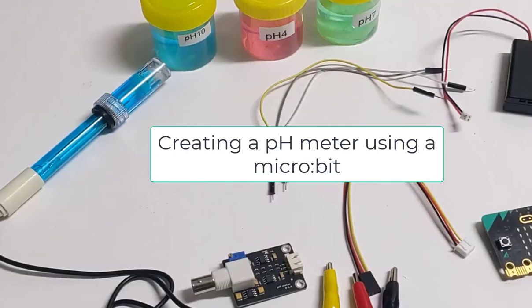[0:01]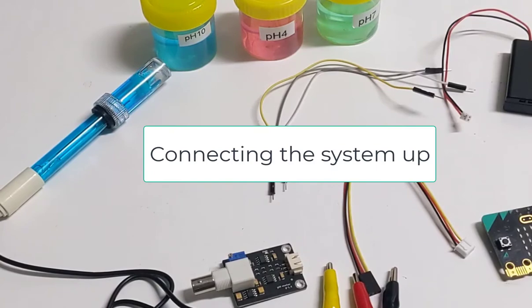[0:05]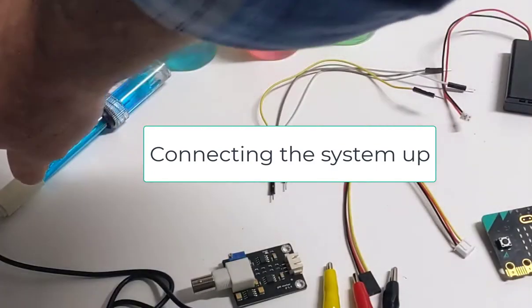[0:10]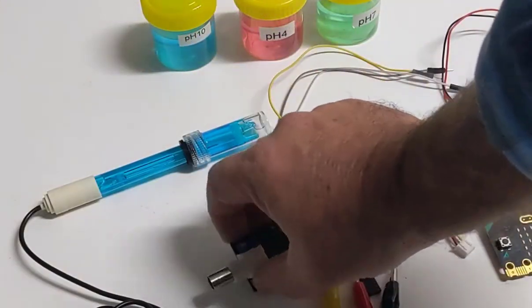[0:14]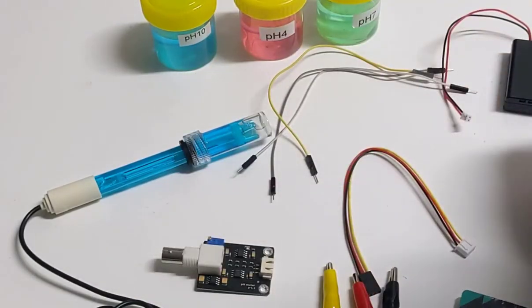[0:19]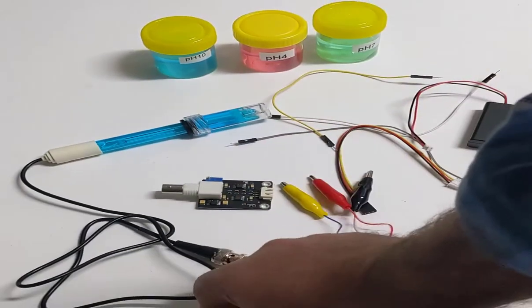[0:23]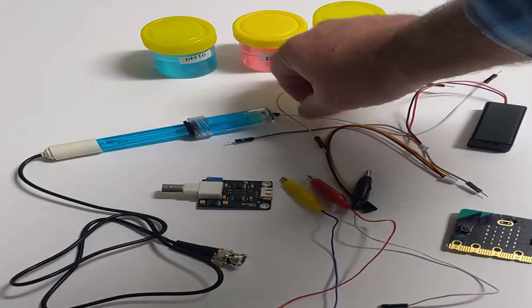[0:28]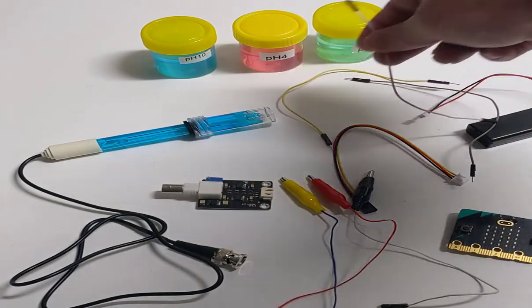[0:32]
In order to create my pH measuring system, there are a few things that I need, including a pH electrode probe, which is this, the sensor signal converter, which is this, my Microbit, a battery pack, some alligator clips, which on the other end of them have female DuPont connectors, and some, or three, male-to-male DuPont connectors.
To set it all up, first thing I'm going to do is connect up my Microbit to the alligator clips. So black can be ground, red can be the 3 volts supplying the power, and yellow can go to zero, which is going to supply the signal.
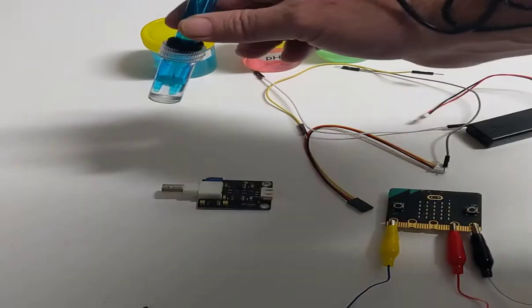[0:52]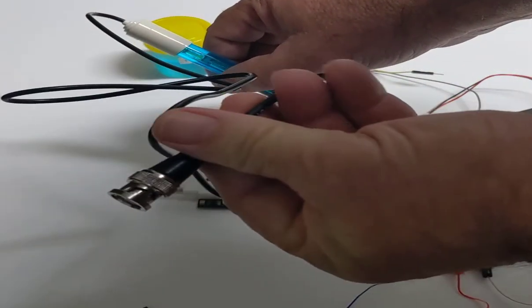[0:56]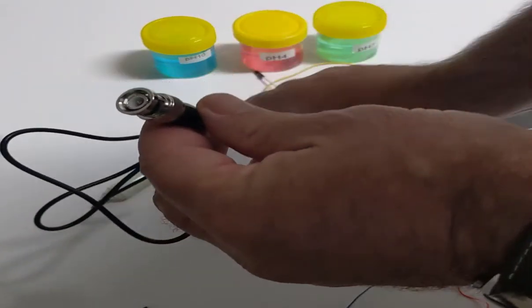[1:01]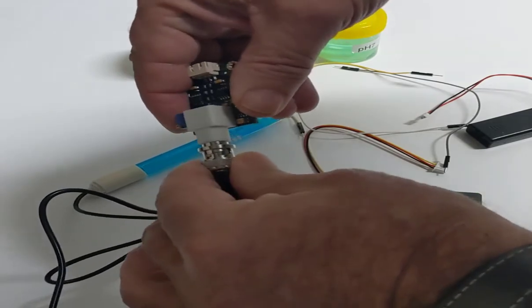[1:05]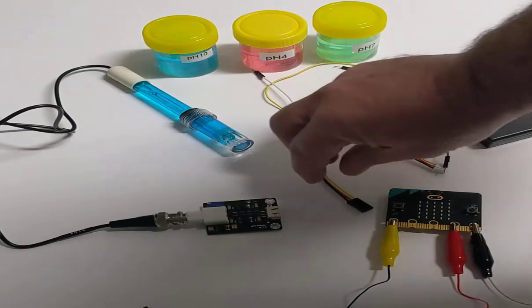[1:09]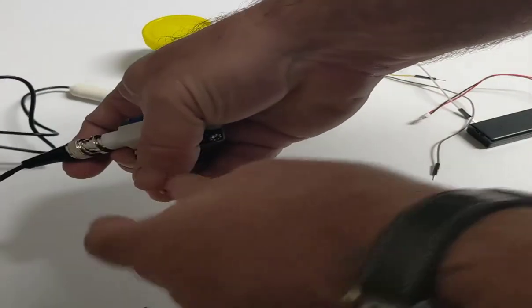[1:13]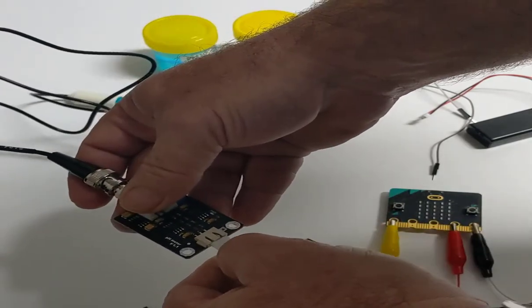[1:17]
Now, the pH electrode probe, notice the other end of it is one of these connectors. It's called a BNC connector, and it plugs in by twisting and locking. So simple, place it in, twist and lock. Then the other end of the sensor signal converter is connected via this wire, which came with it. It only goes in one way.
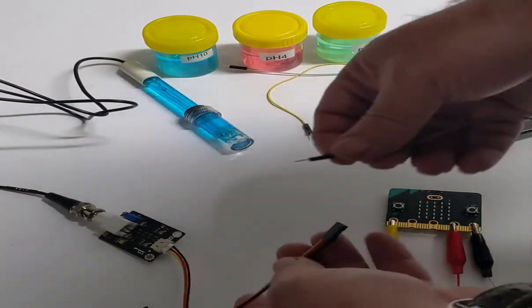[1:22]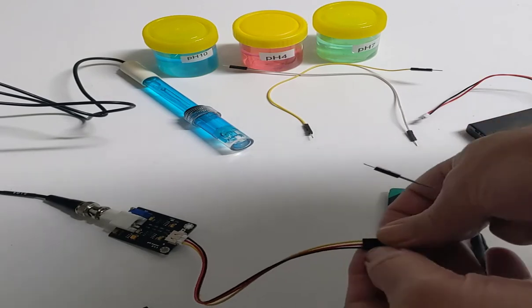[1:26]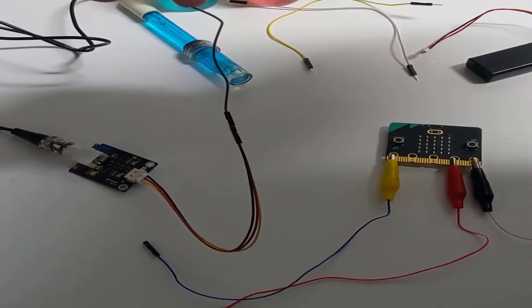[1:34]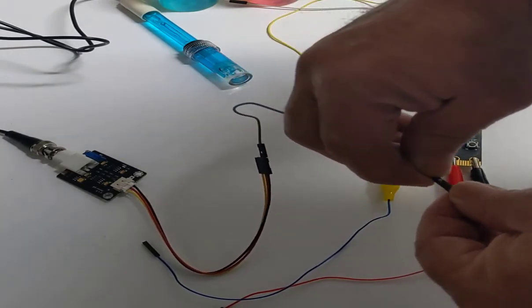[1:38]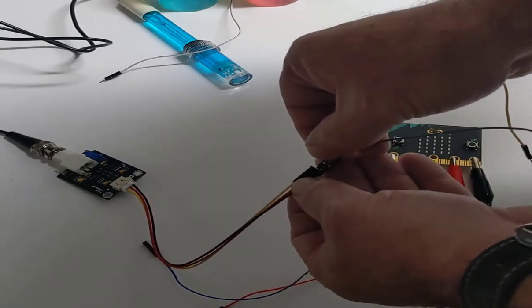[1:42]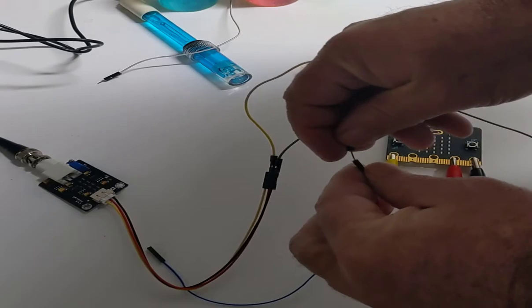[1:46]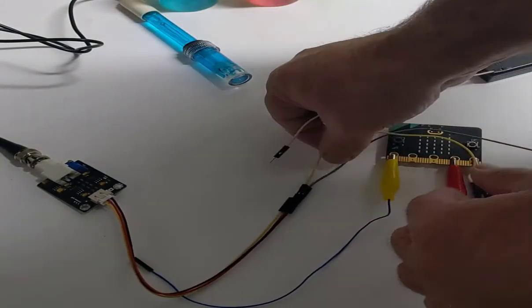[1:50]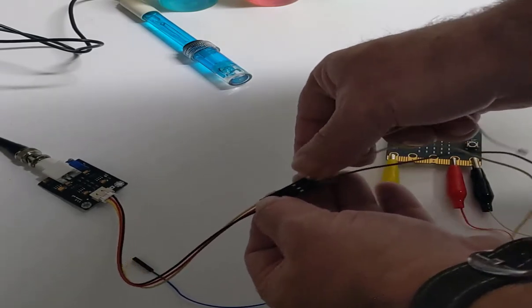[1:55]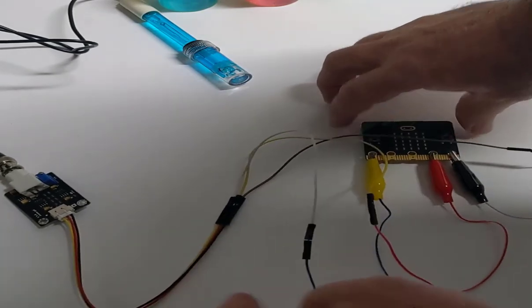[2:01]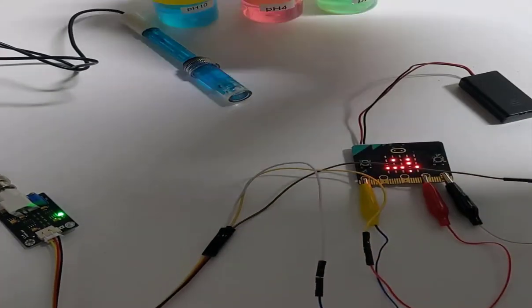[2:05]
There it is. And now all I really need to do is connect this male to male, so I'll do them one at a time. So my ground is going to use the grey cable, and the other end of ground is this, so it will connect in there. My power, which is the red middle, is going to connect to my red here, and the last one, which is supplying the signal, which is yellow there, I'm going to place that in. It's white here, and it goes to the yellow alligator clip.
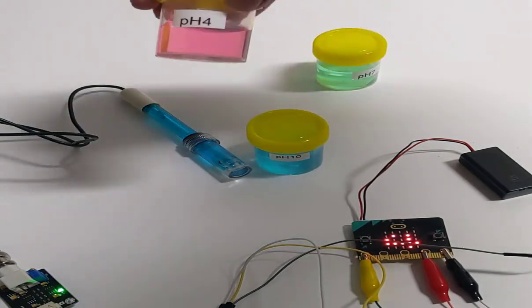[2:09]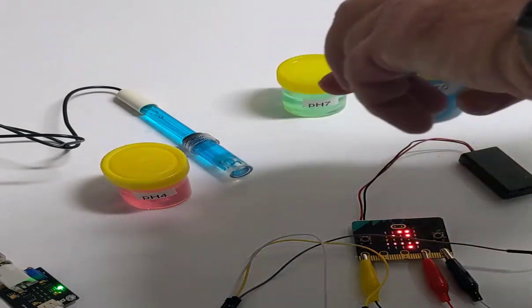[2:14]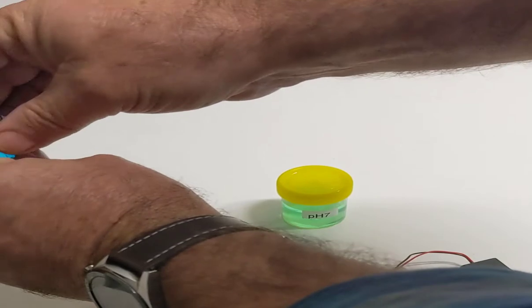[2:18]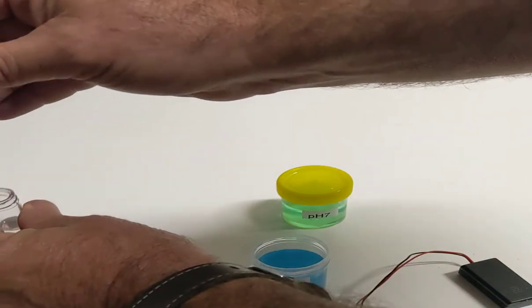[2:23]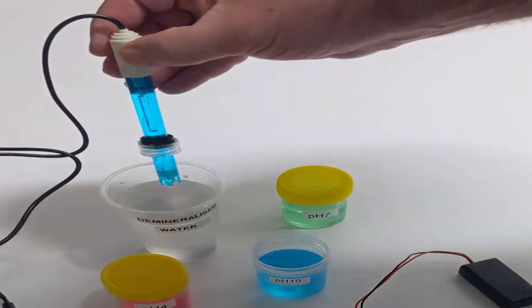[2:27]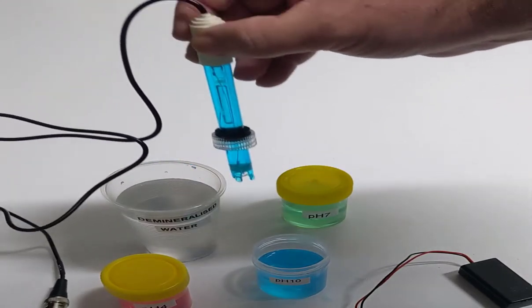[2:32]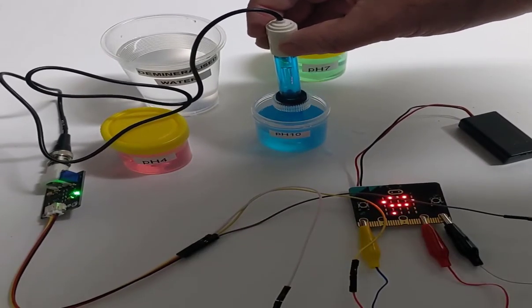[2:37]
Then when I plug my Microbit in and choose one of the buffer solutions, so here I've got pH 10 buffer, pH 4 buffer, and pH 7 buffer. If I choose my pH 10, carefully unscrew my pH electrode probe. First of all, wash it in a little bit of water, and then place it in the pH 10 buffer. I should get a value once it settles down up near about 10. And there it is. So that's how we connect it up.
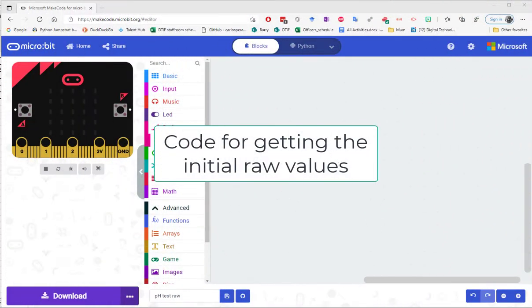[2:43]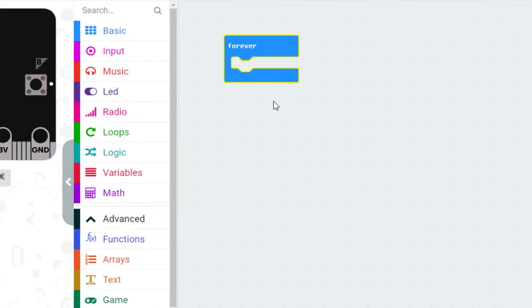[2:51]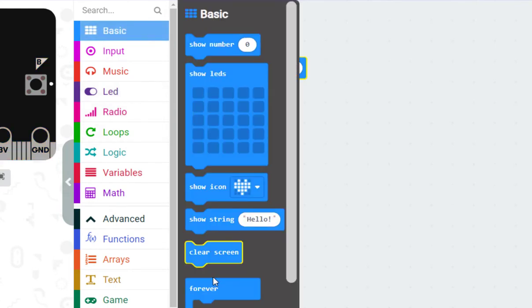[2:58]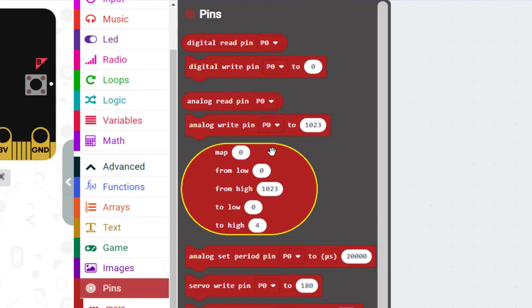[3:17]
So in order to get my initial values, I've opened up Microsoft MakeCode for Microbit, and I'm going to create a basic loop that goes on forever. In this loop, I want to show a number, and then I want to just let the Microbit pause for a couple of seconds, so I'll make that 2 seconds. The number that I want to show is going to come from an input from the pH electrode probe, and I'll plug the data lead from that meter into pin 0.
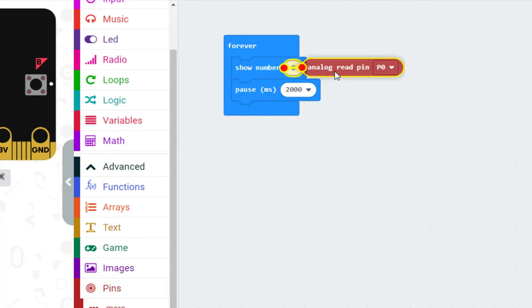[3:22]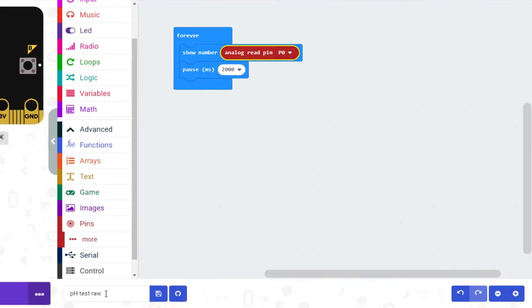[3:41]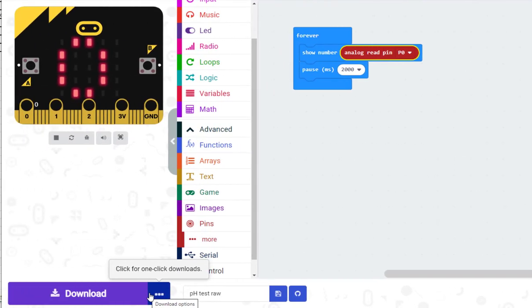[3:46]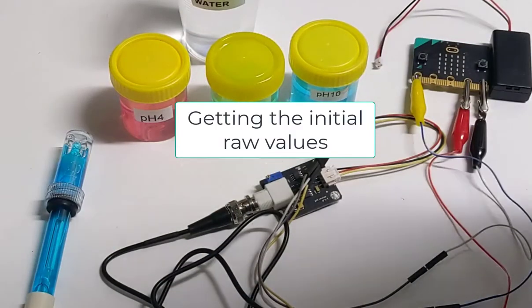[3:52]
So I'm going to read analog pin 0, and it's analog because the number won't be a 0 or 1, it'll be a number that may be in the range of 0 through to maybe even 1023, I don't know, but let's take a look. That's about all I want my code to do. So I can save that as pH test raw, and then I can download it to my Microbit by clicking the download button. Now I'm going to plug my Microbit in and get my sensor ready, and let's see what happens.
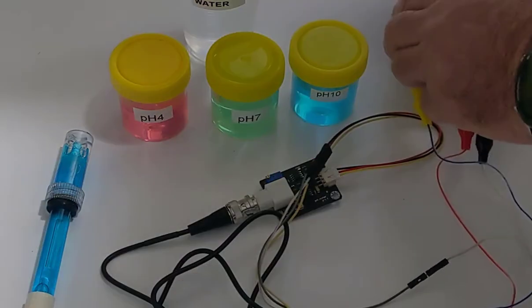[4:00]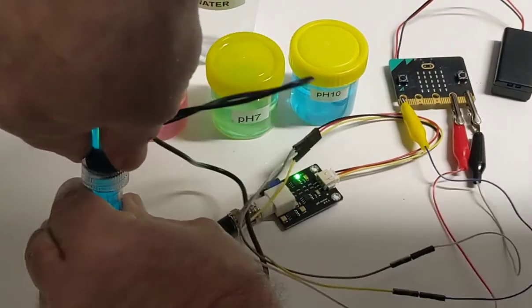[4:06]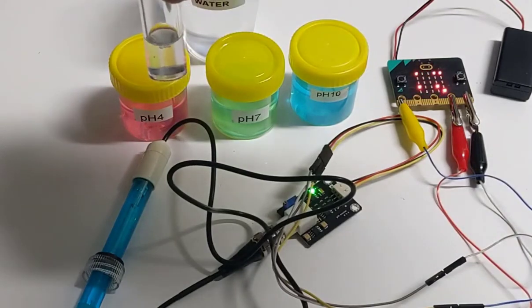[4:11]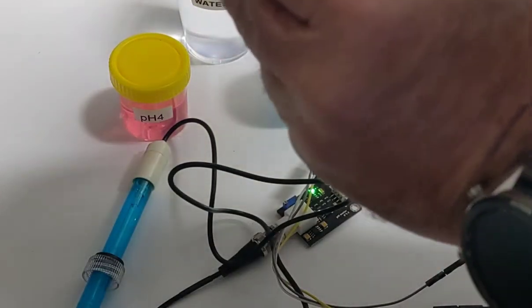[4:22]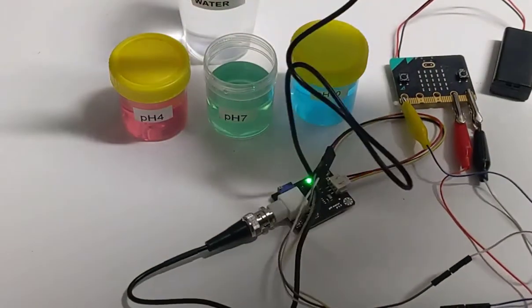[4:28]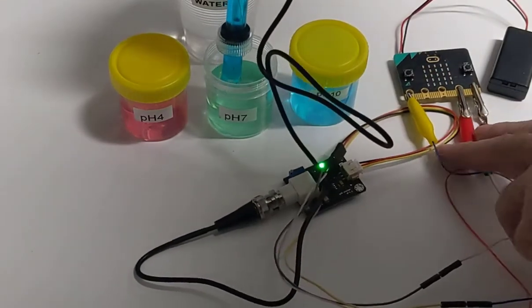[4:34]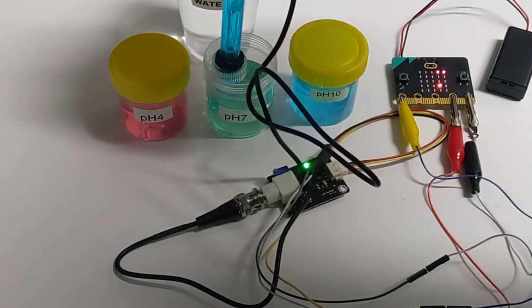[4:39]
So the Microbit's plugged in. Carefully unscrew, and notice that there's still some liquid in the bottom of this. I want to keep that because that is used to keep the sensor neutral to help with calibration later on. So we'll start with the pH 7, which is neutral. I can dip my sensor into the pH 7, and if you look at the Microbit, I'll just shake it around a little bit. Let's see if we can get a reading.
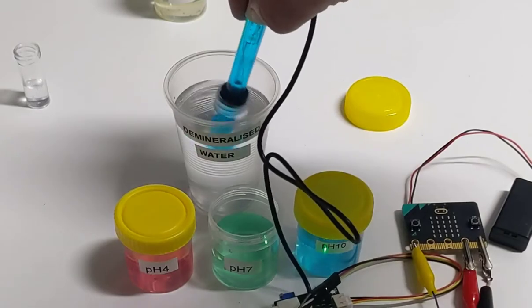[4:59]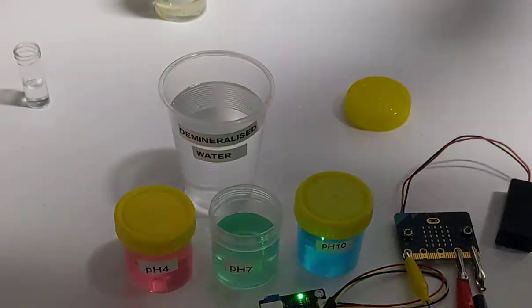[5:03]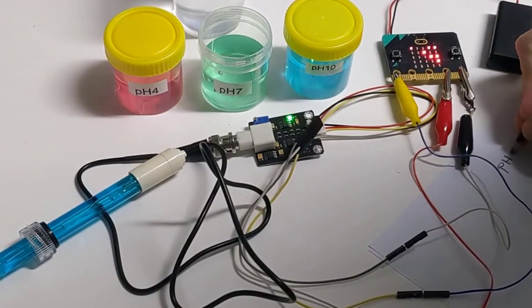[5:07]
And what we want to do is make sure that we get the same reading a few times or thereabouts. We're getting 3.63. Okay, so that seems pretty stable, so let's go with 3.63. I'll just wash the sensor out, and very quickly I will write down that pH 7 gave a value of 3.63.
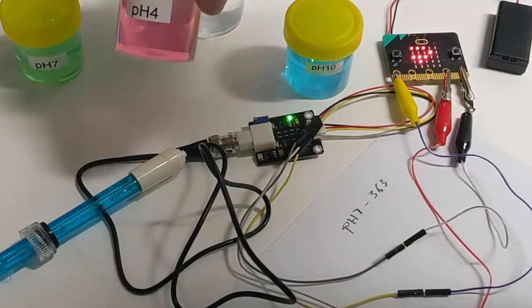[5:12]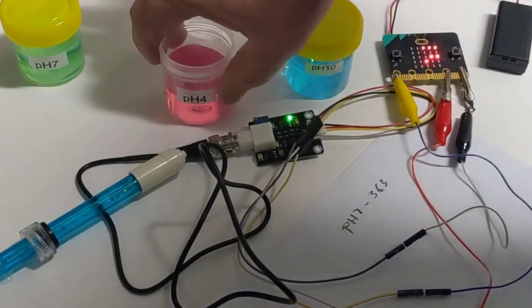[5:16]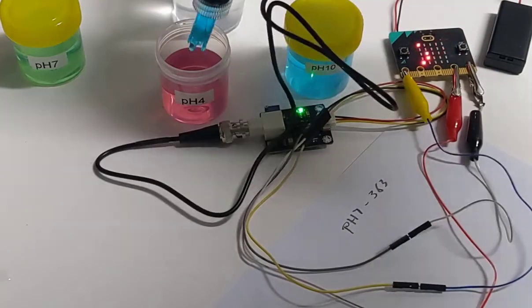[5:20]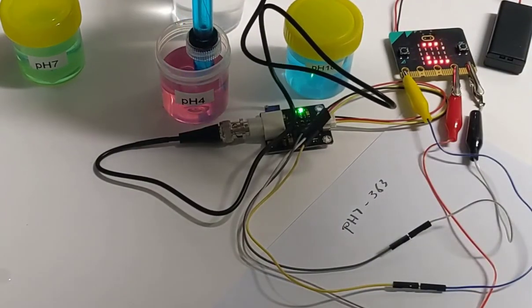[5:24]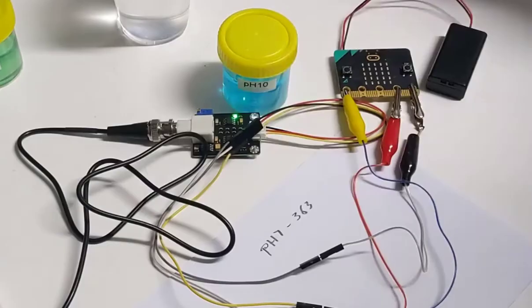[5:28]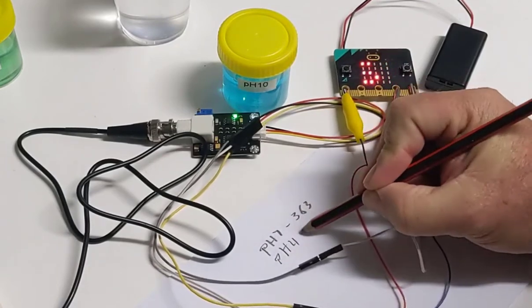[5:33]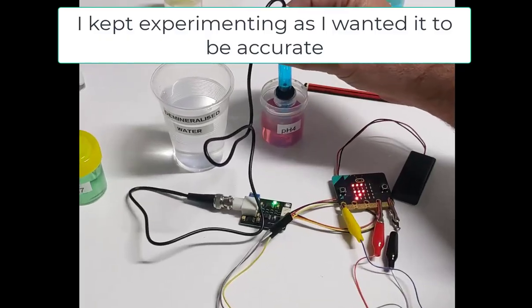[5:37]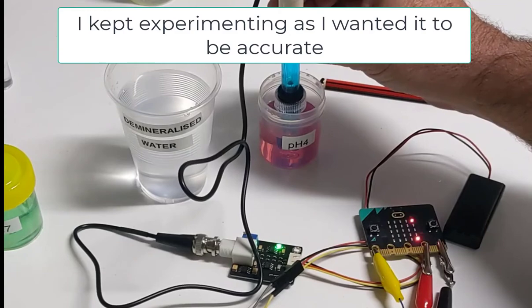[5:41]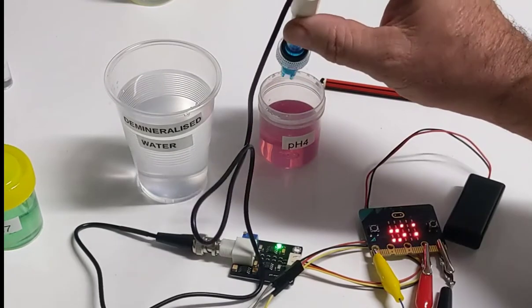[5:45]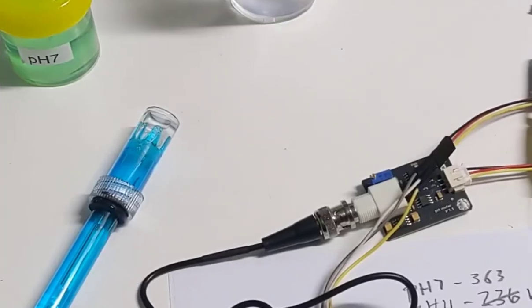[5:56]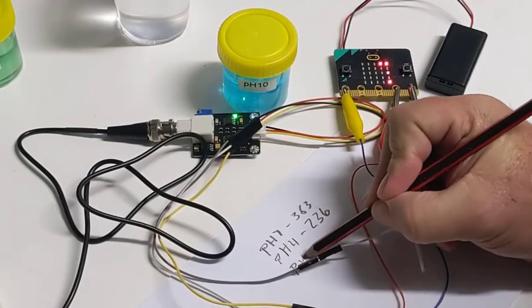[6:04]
Now we'll try pH 4. This is somewhat acidic. I've already washed it in demineralized water. Place the sensor into the pH 4 and shake it around just a little bit, and I'm getting 223. Let's make it 236. So if I place it in the pH 4, I get a value of about 193. 191. So I can see that I've got 188 three times in a row, so let's use that. So that means I can change my pH 4 value down from 236 to 188, which is a little bit more accurate. And then pH 10.
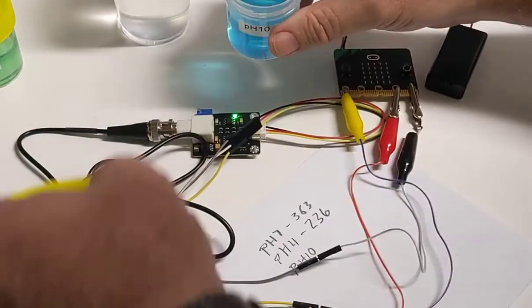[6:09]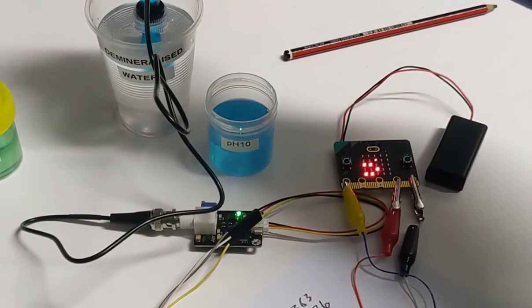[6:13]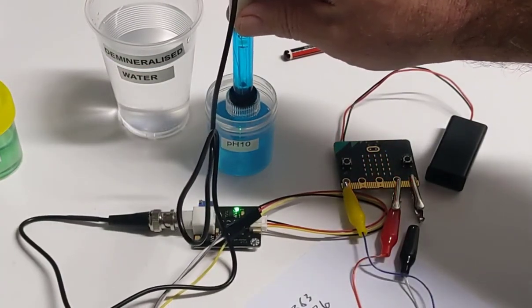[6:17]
And let's just make sure it's nice and clean. Put it in the pH 10, let it stabilize.
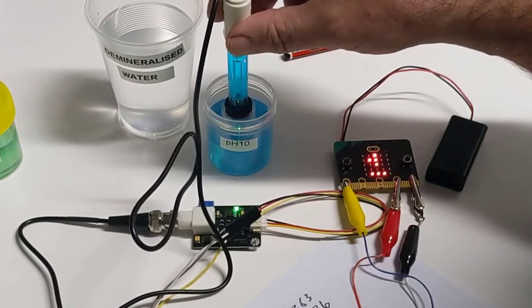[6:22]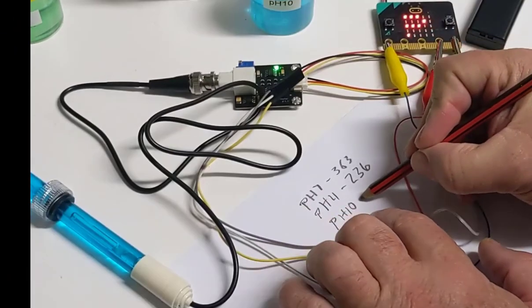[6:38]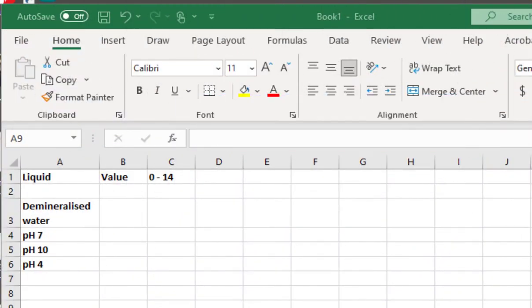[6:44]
So I got 511 and 511 and 510, so let's make it 511. So I've set up a little spreadsheet to help me to work out the mathematics of this.
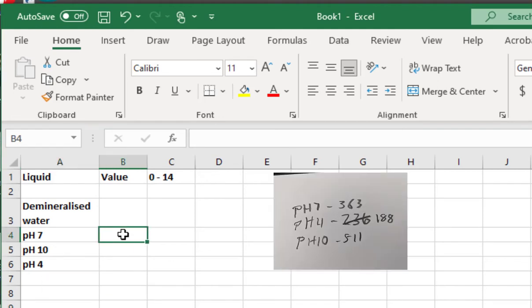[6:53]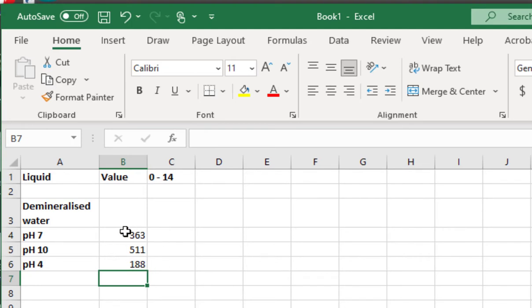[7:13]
Well, I imagine pH 7 should be the middle of that range, and the middle of that range is 7. So in order to get 363 down to 7, if I divide it by about 50, let's see what happens. So I make a little formula, which is equals B4 divided by 50, and I get 7.26, and I'm happy with that. Now, will that work with the other two?
Well, I can drag the little blocks down. pH 10 becomes 10.22. I'm happy with that as well, because 10, 10, 7, 7. But pH 4 is 3.76. Now, if I take a look at that, I know that if I round that, it becomes 4.
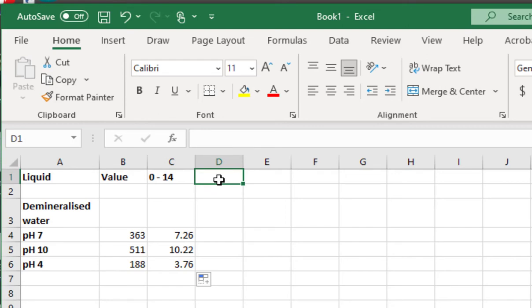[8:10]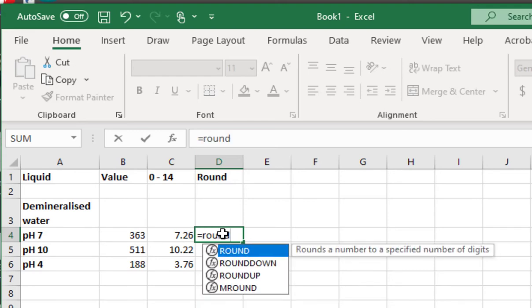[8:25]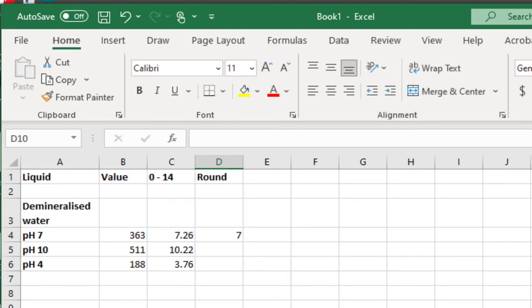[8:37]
So let's put in a new column called round, and let's make the C4, C5, and C6 values equal to the round of their value, and I need to put in a comma, and I need to round it to zero decimal places. So there's my formula, and that becomes 7, and I can double click that, and now I have 7, 10, and 4, so it's rounded.
So that means that I can now choose some other numbers and see what happens. So I imagine that if I put in a pH value of, let's make it something like 10. So a raw value of 10 will give me a number of 0.2 in our range, and if I round that 0.2, it'll become 0. So I'm happy with that.
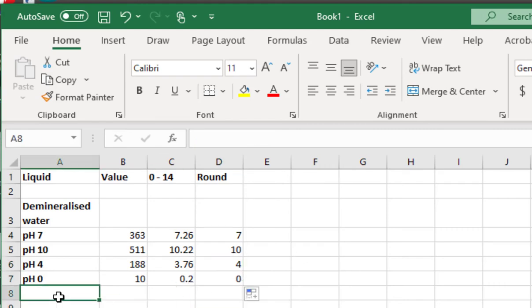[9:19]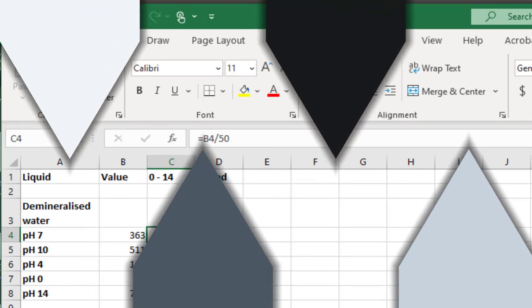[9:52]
If I go to pH 14, so I imagine if I get a value of around 700, let's make it 710, and again, okay, I see that I get something in the range of 14.2, but if I round it up, it becomes 14. So it looks like my little formula has worked all right. So now we can see how to apply that formula inside of the Microbit to make our code a little bit better. There are two ways that I could approach this.
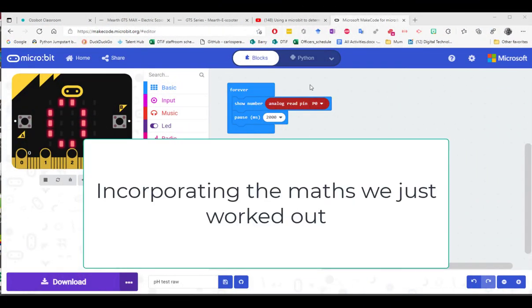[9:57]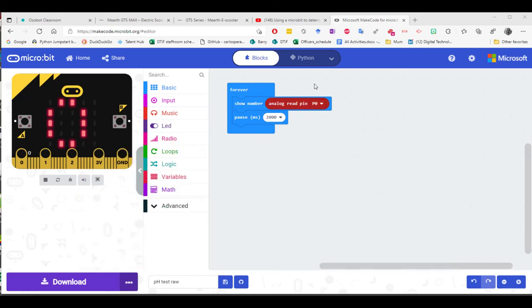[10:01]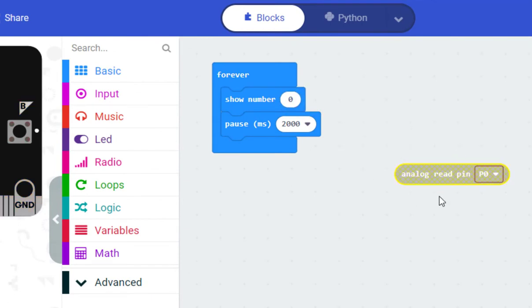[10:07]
One is with this original code, and using the spreadsheet that we just looked at, and we'll do that first. So instead of just show number analog read pin 0, I need to do a little bit of maths with this analog read pin 0, including dividing it by 50 and rounding it.
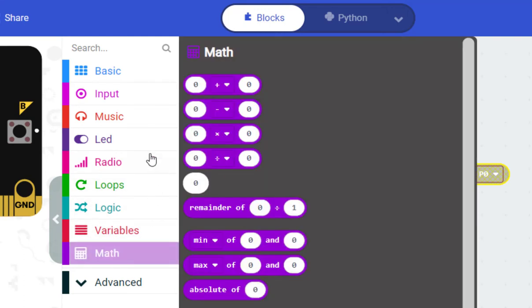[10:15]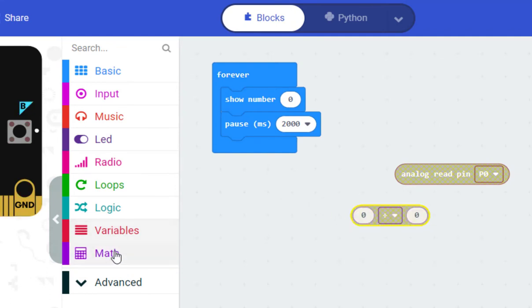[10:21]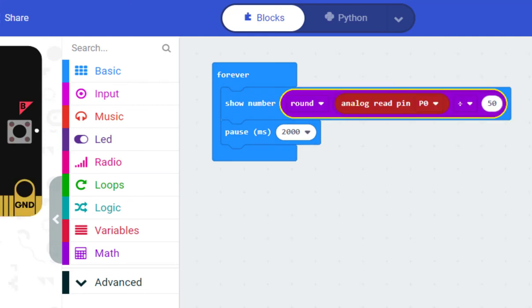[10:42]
So if I go to my maths, I can choose my divide by block. Inside of maths again, I can choose round. So these are the extra bits of code block that I need. It's analog read pin 0 divided by 50, and I want to round all of that so that I don't get decimal points. Downloading and running this will give me values between 0 and 14 without any decimal points, and uses the calculation that we worked out with the spreadsheet by dividing by 50.
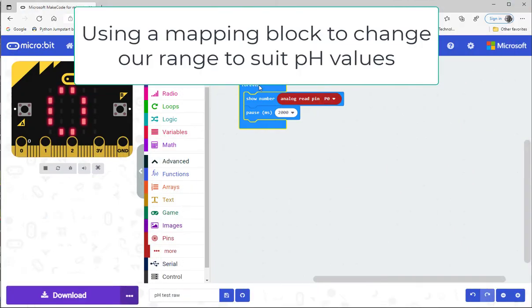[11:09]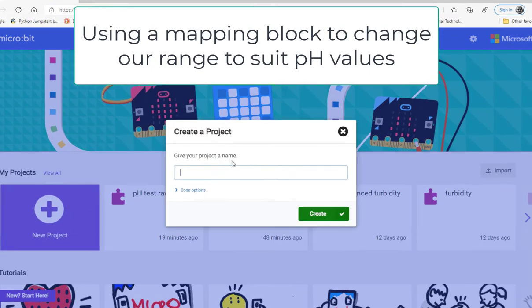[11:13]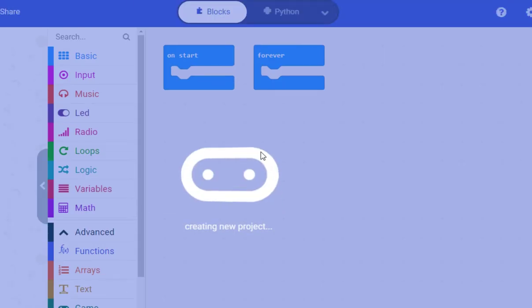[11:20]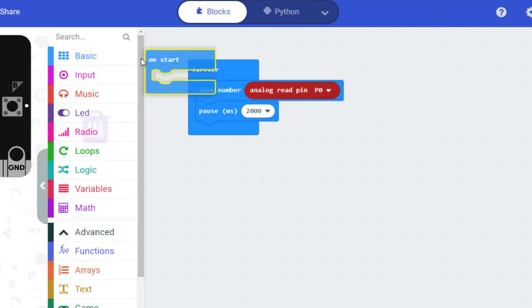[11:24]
There is another way that we can do this that doesn't require us to do the calculation ourselves in the spreadsheet. The Microbit code does all the mathematics and gives us a similar result. So we'll look at that next. So now I'm going to copy this with Control C. I'm going to go home. I'm going to create a new project. I'm going to call it phfinal. Let's create that. I should be able to Control V, and I've got my old code in there.
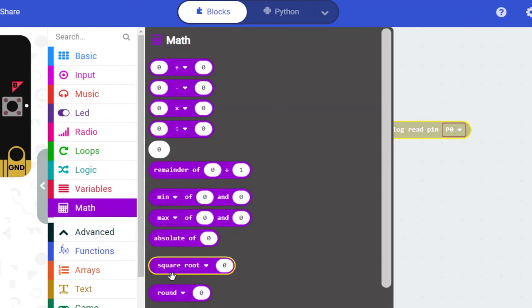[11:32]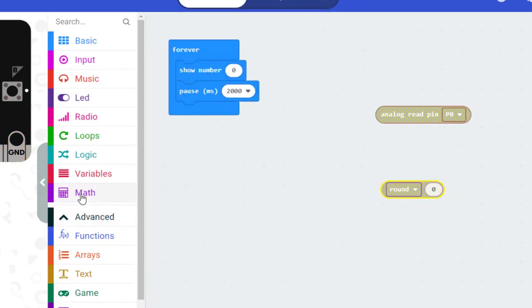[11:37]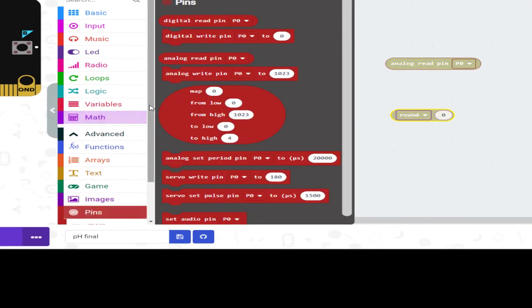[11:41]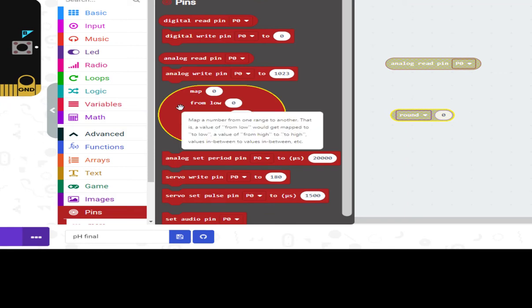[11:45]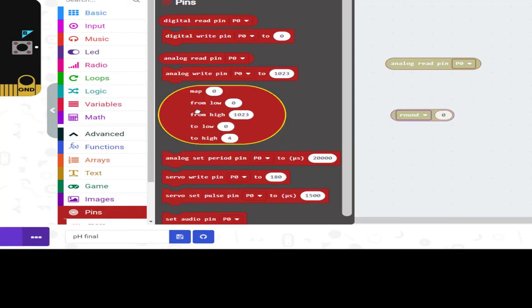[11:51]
Instead of showing just this number, I want to show that number, sure, but I want to round it, which is what I did in my Excel spreadsheet. And what I also want to do is I want to map the numbers so that they're not 0 to 700, but they are 0 to 14 to reflect the pH chart. How do I put all of this together?
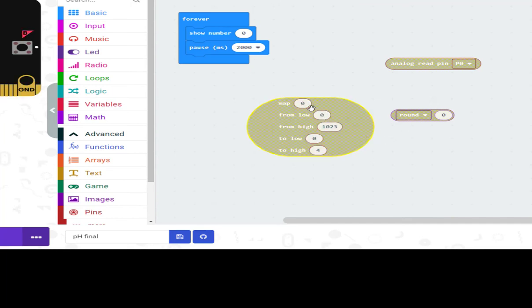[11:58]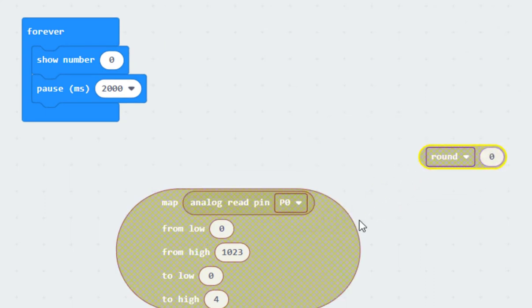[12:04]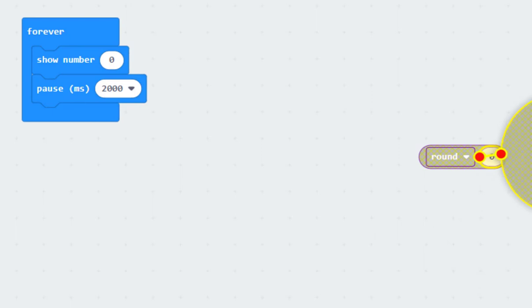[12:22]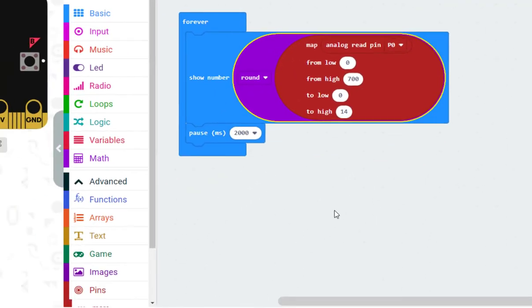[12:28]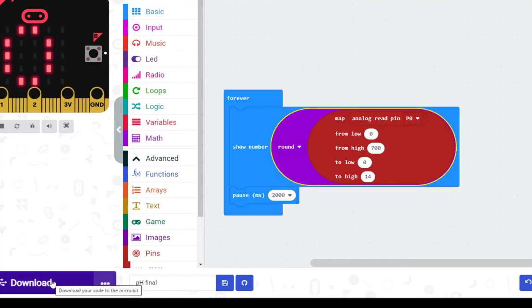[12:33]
I want to map my analog read pin 0 from a low of 0 and a high of around 700 to a new low of 0, which is the same, and a high of 14. And then I want to round all of that. So I'm going to drop that inside of here. And now if I download this to my Microbit by clicking the download button, it downloads to my Microbit. And let's take a look at what happens when I retest these values.
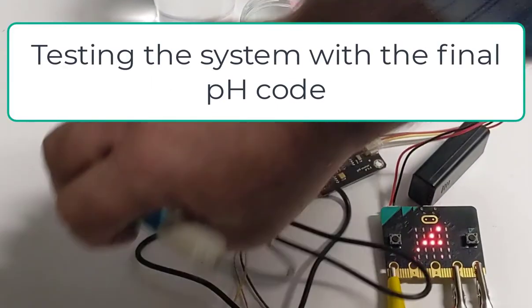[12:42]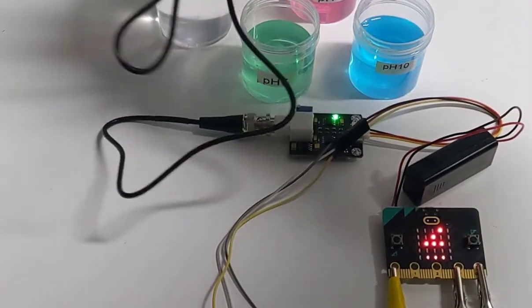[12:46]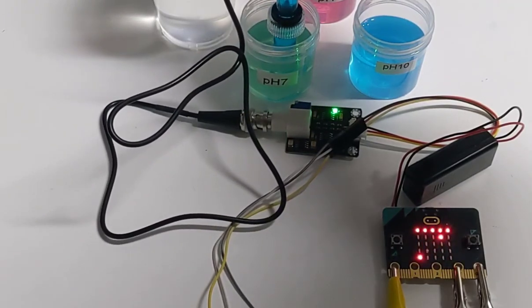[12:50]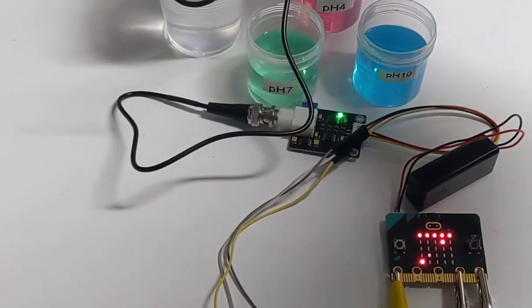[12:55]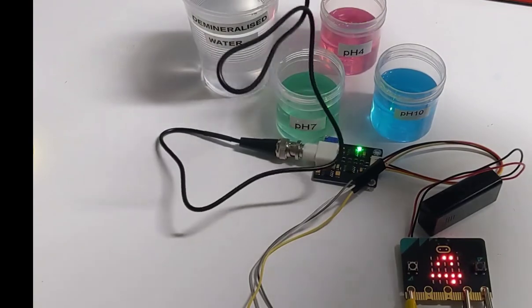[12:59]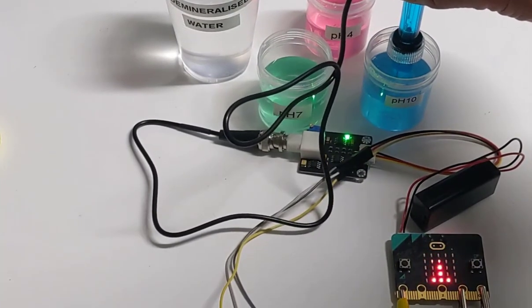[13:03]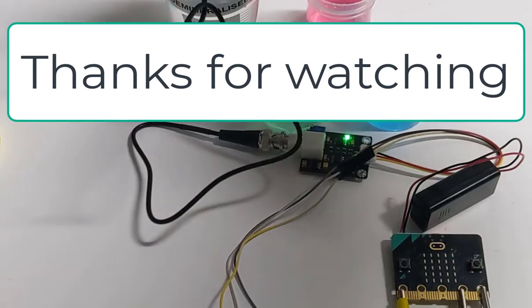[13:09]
So now if I place my meter in pH 7 buffer, I get a value of 7. If I place the pH in 4, I get a value of 4. And if I place the meter in 10, I get a value of 10. So that's pretty accurate.